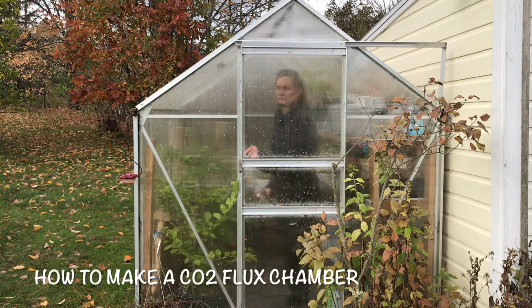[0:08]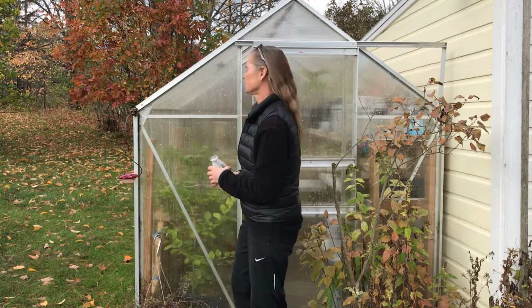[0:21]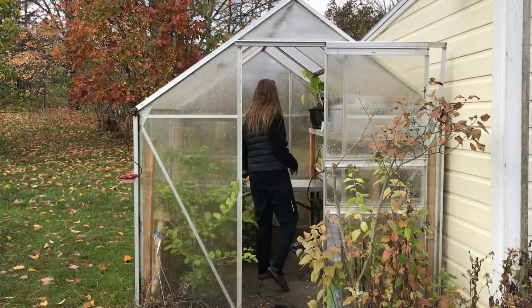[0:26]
Hey, welcome to the greenhouse. I'm Alex. This is a how-to video where I'm going to show you how to make the little flux chambers that we use for our photosynthesis and respiration experiments. Come on in.
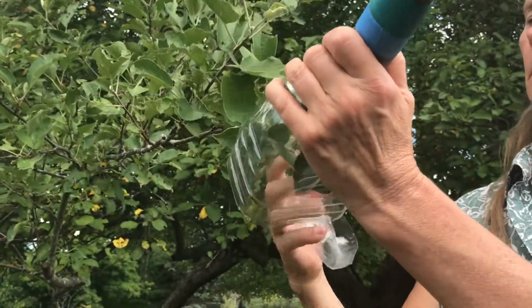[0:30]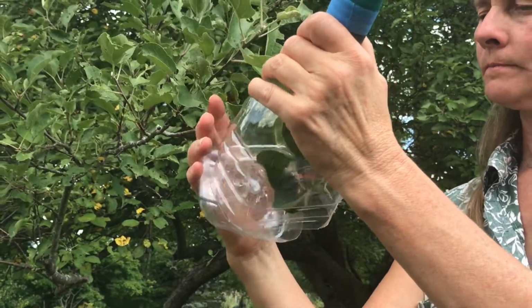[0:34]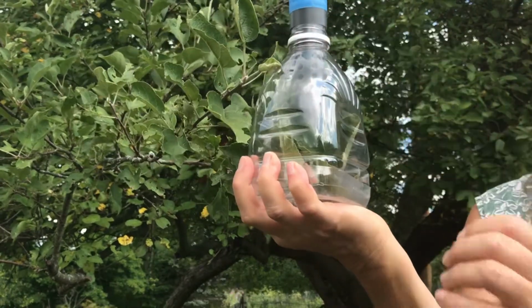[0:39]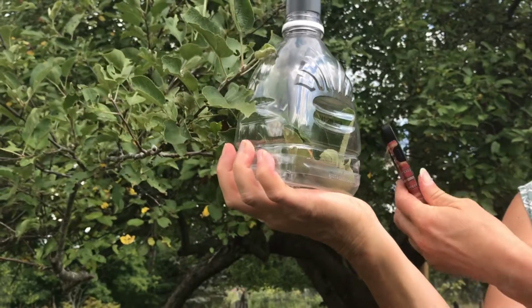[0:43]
When we want to quantify the rate of change of a gas like carbon dioxide, we need to work with a fixed volume of gas. This is because our instrument measures the concentration of carbon dioxide in most cases in units of parts per million. That is the number of CO2 molecules in 1 million molecules of air. So if we have twice as much air, we'll have twice as much carbon dioxide. That's why we need to build a sample chamber with a fixed and known volume.
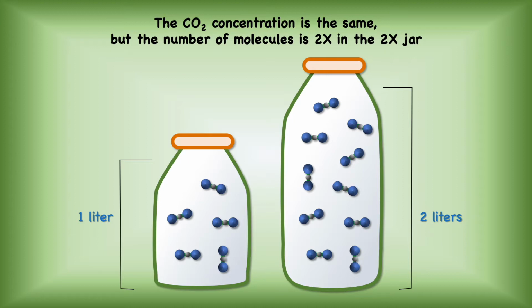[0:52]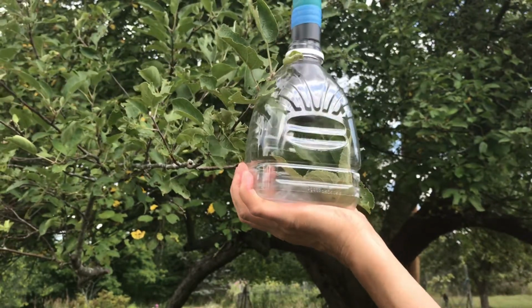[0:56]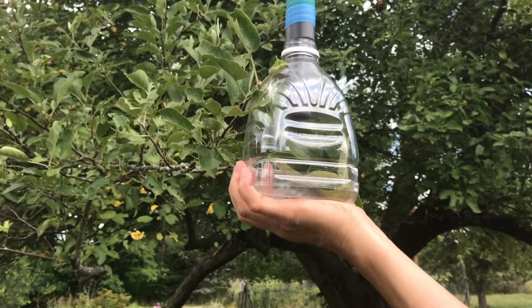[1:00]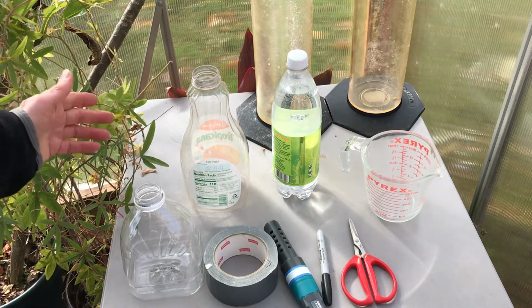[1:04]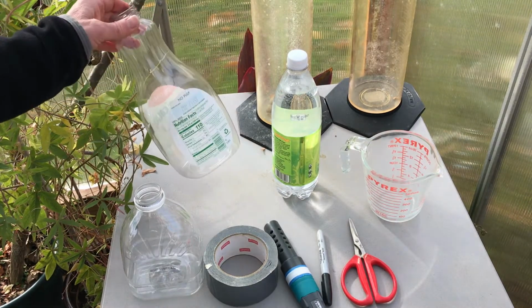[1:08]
By far the easiest volume to work with is one liter. One of anything will make our calculations much easier, and it gives us one less place to make a mathematical error. Here are all the materials that we're going to need. Plastic juice bottles make great flux chambers. Clear plastic is good for photosynthesis, and it's flexible enough that we can cut it up to any shape or size we want.
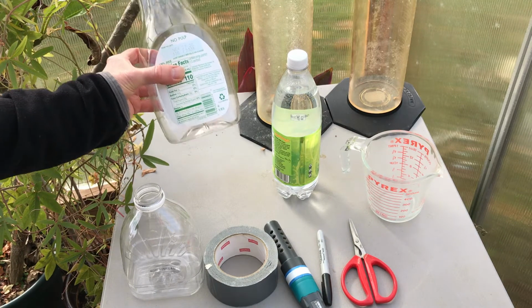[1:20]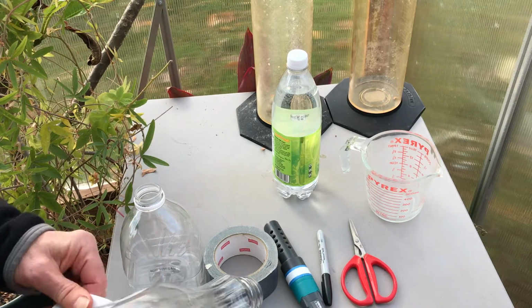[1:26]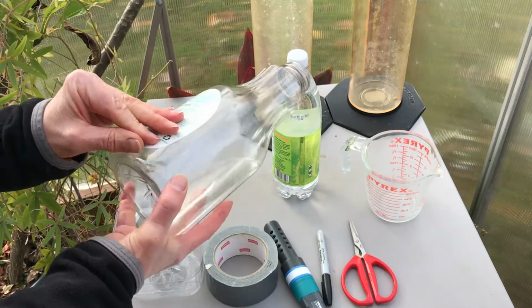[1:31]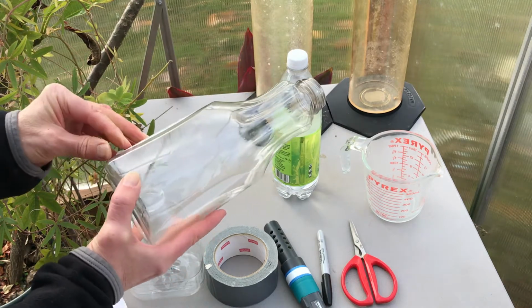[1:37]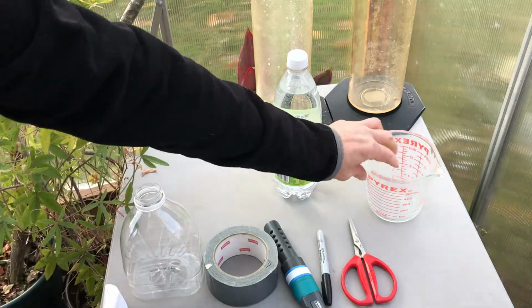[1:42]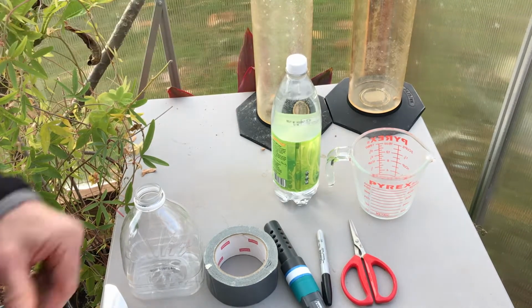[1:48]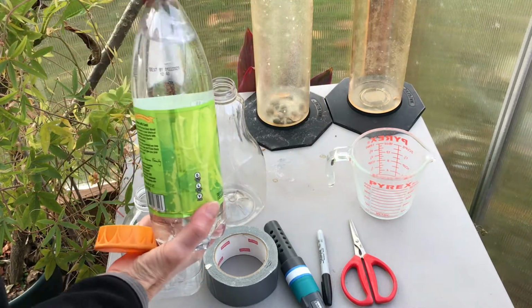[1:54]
I'm going to start with a 52 ounce juice bottle, that's 1.6 liters, and I'm going to peel off the labels so that the sunlight will pass through. Then to make this a one liter container, I'm going to need one liter of water. You can measure a liter with a beaker if you've got one, or a measuring cup, or even a one liter soda bottle. So what I'm going to do is pour the water in.
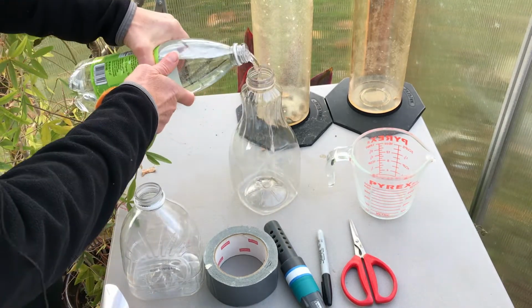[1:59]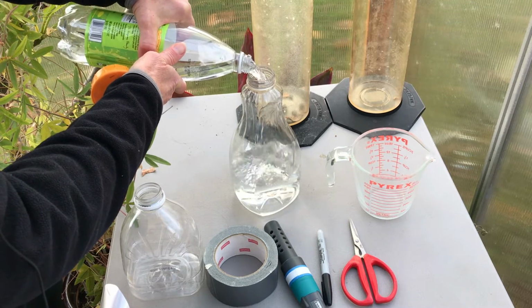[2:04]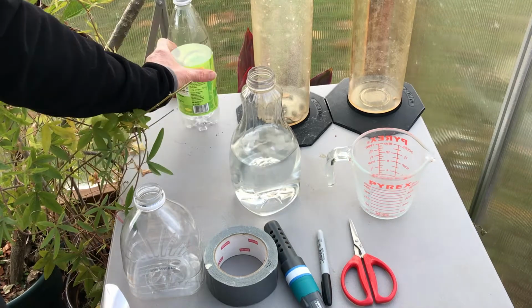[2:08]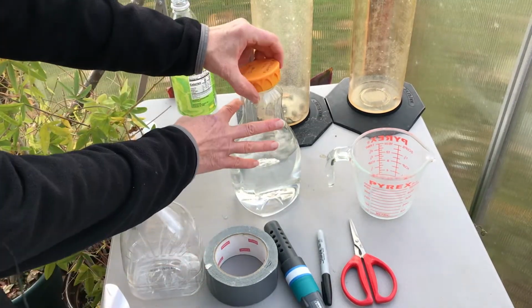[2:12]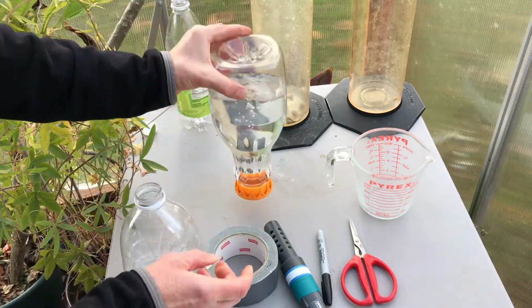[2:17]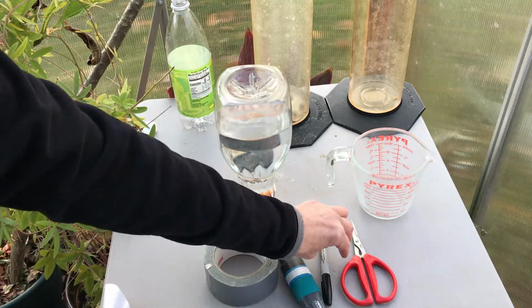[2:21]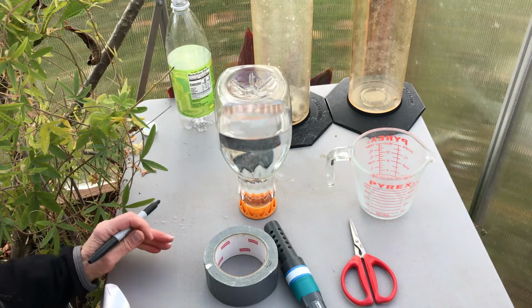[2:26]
One liter. I'm going to put the cap on and turn it upside down. Now once the water settles down, I can draw a line all the way around the bottle at the one liter mark.
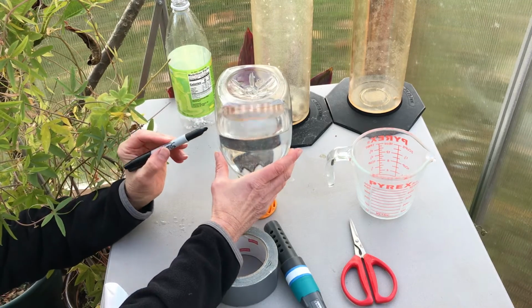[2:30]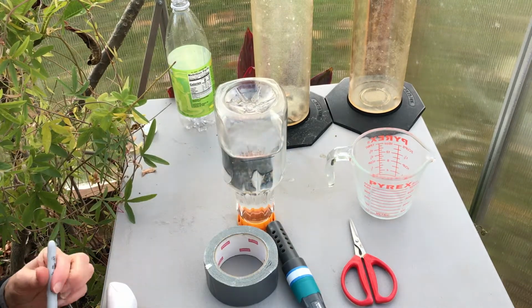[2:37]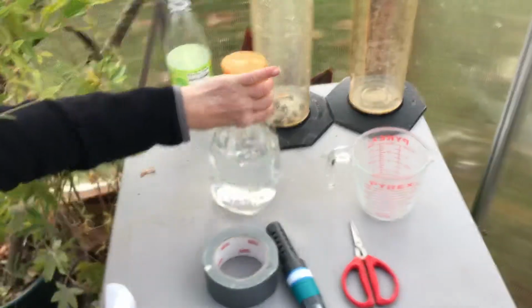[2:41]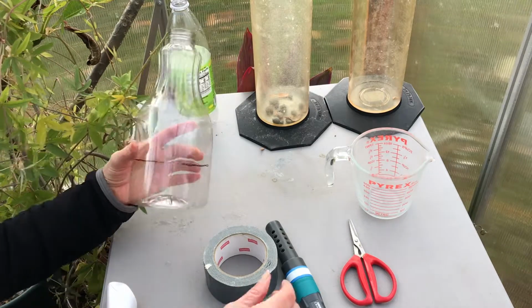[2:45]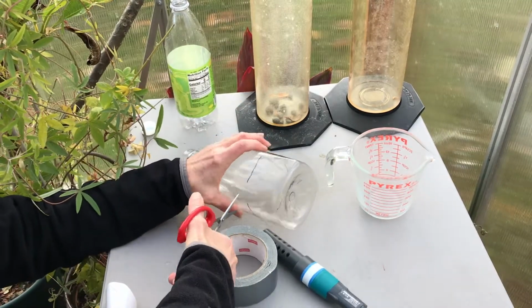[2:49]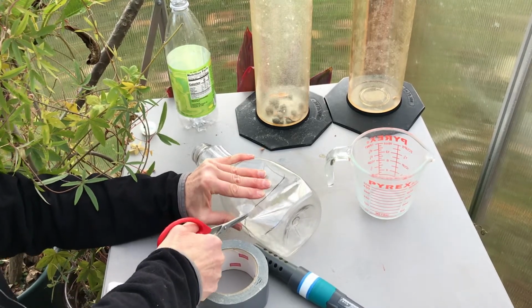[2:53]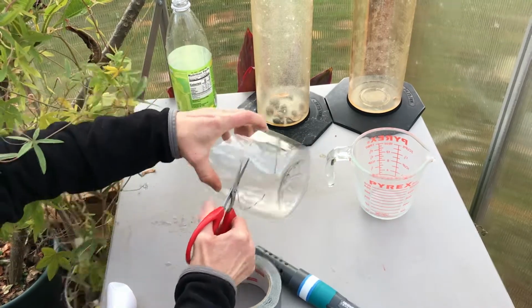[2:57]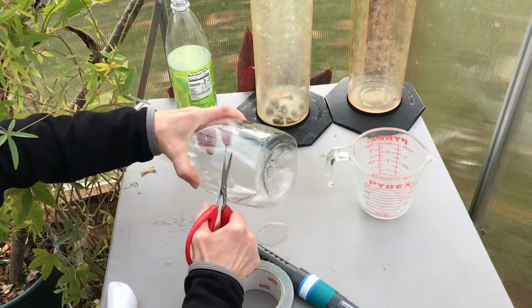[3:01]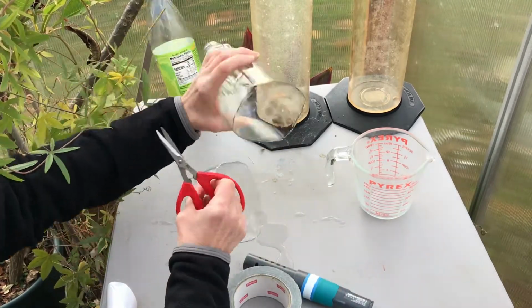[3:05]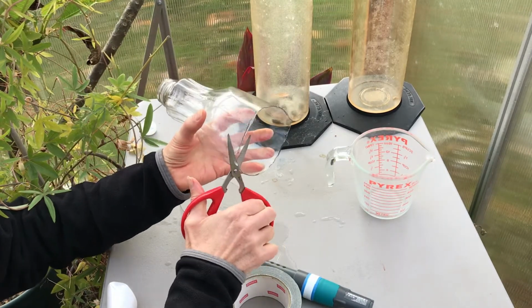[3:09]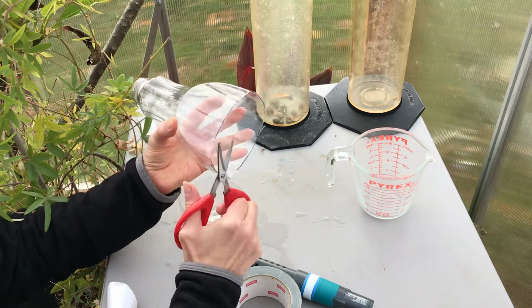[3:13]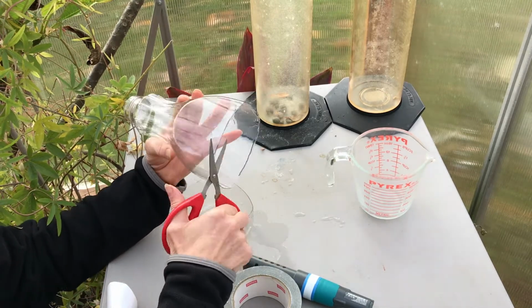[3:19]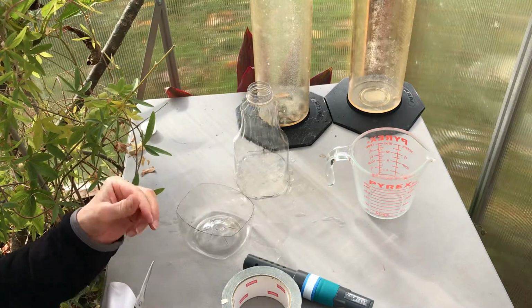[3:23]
Okay, now I'm going to get the water out and we're going to cut the bottle. So we're going to very carefully cut this on the mark. All right, and once you've cut it off, you can trim it up and make it even. It's good to make it even; you don't want any little pokey things on this.
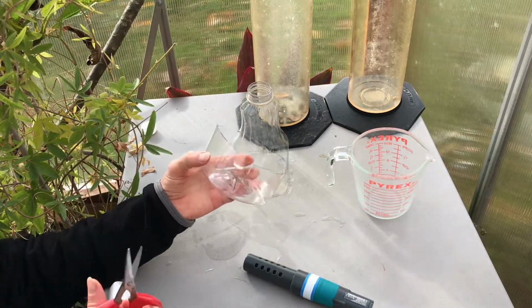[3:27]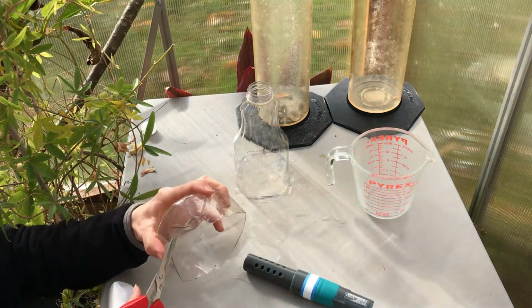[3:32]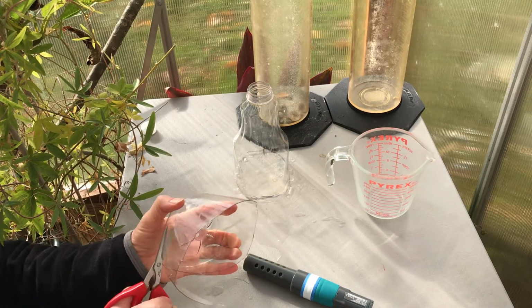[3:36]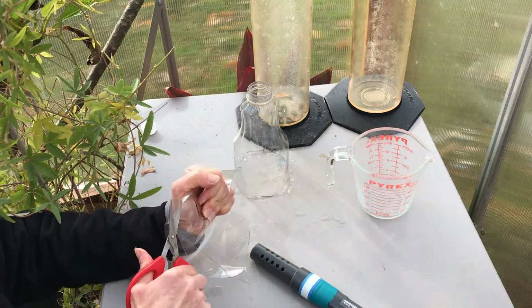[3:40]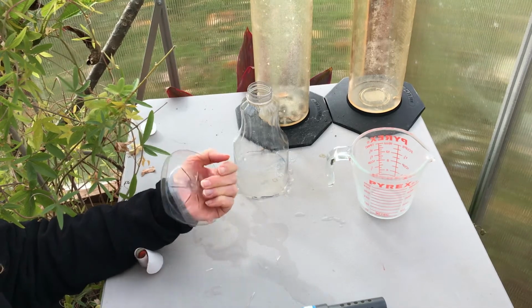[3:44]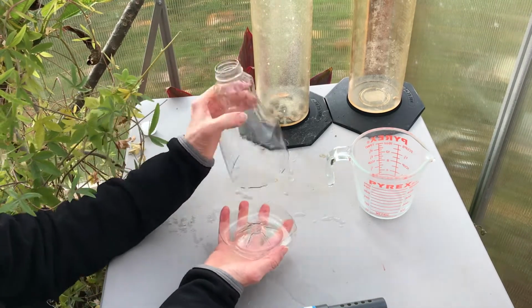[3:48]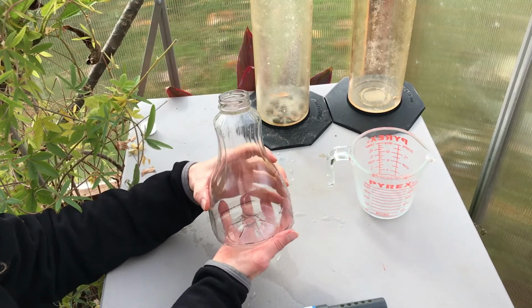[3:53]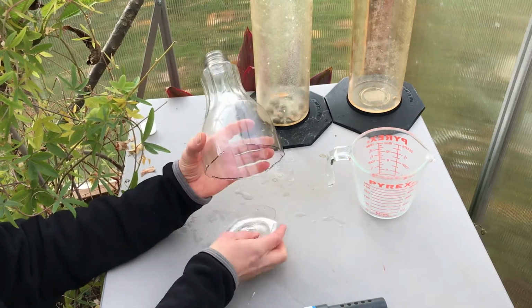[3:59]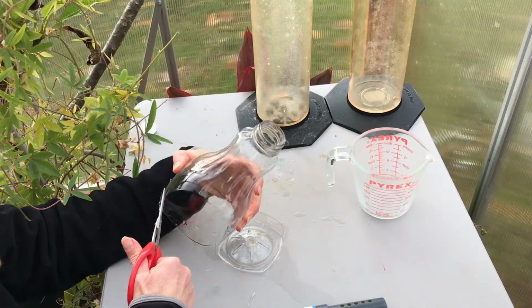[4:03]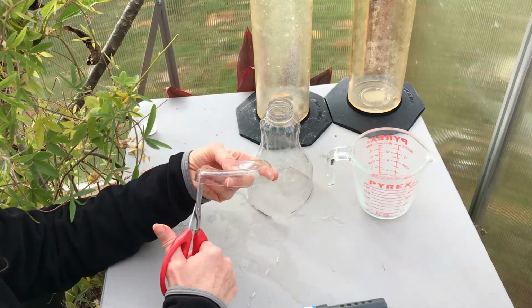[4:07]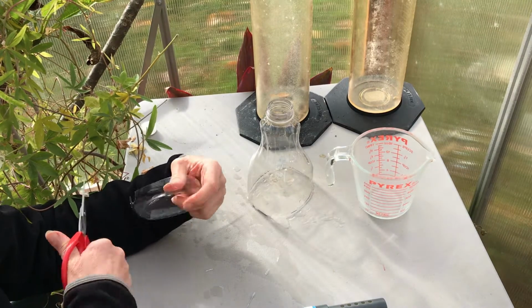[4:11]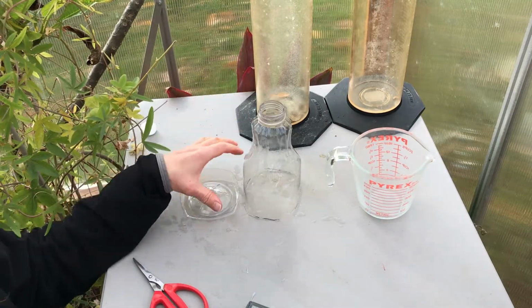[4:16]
Okay, now for photosynthesis I'm going to need the bottom half as well, so I'm going to trim this down a little bit, because we just need to be able to close up the bottom. All right, there we go. Okay, so now these two pieces will fit together so that we can close this around our plant. I'm going to need to make a notch in the corner of both halves so that we can put a stem or some leaves in here.
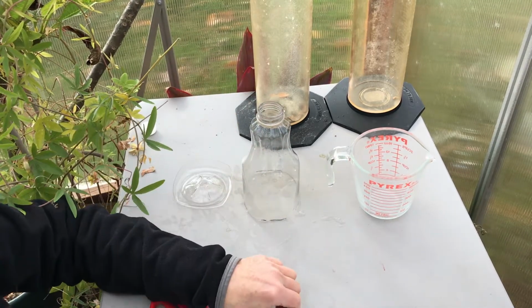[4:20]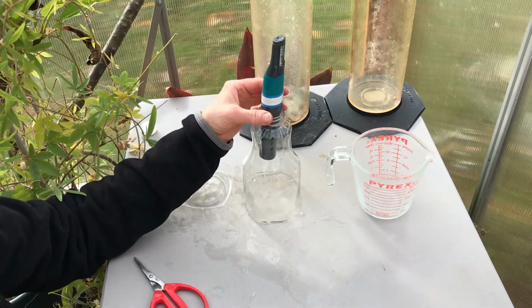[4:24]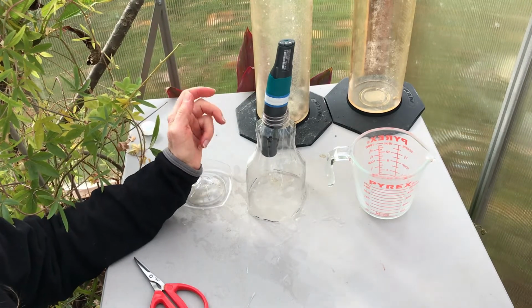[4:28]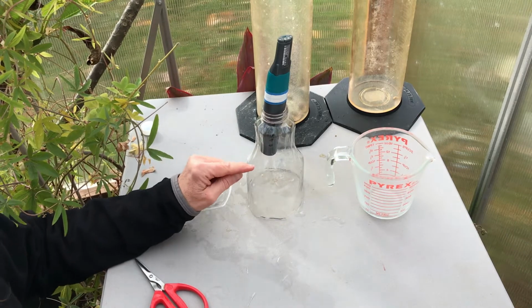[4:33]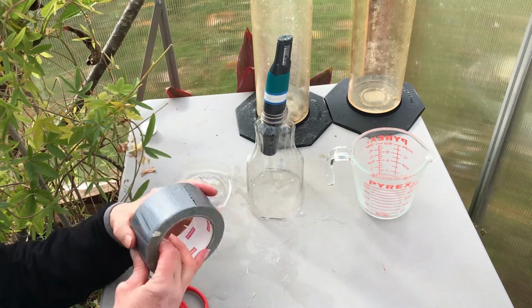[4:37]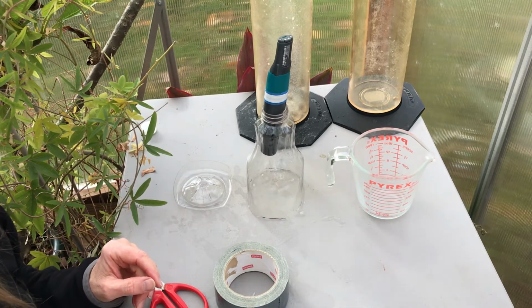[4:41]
Now the top of the bottle. You need to check ahead and make sure that the opening on the top of the bottle is going to fit your CO2 probe. Fitting it in nice and loose is fine, because we're looking at the gas fluxing through the chamber. For a respiration experiment, we don't want the light to shine through the bottle, so we're going to take some duct tape and cover the bottle up. This is what it will look like covered in duct tape.
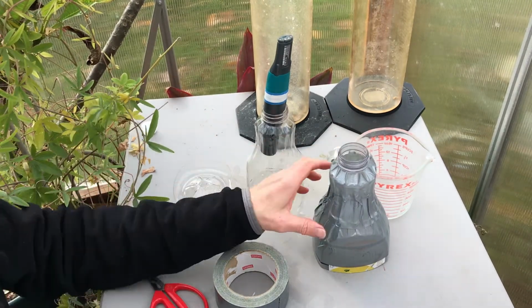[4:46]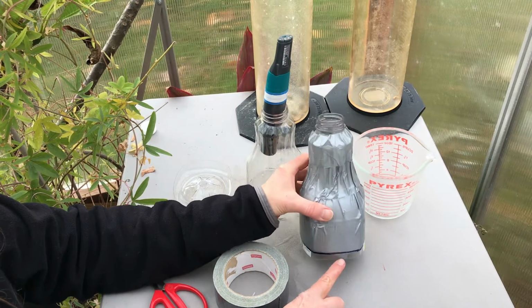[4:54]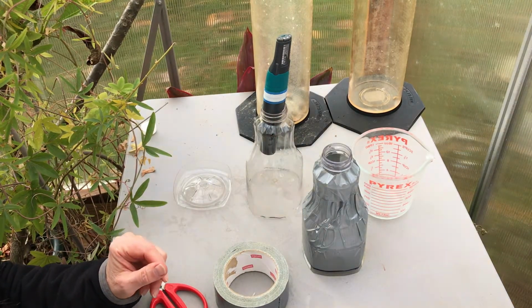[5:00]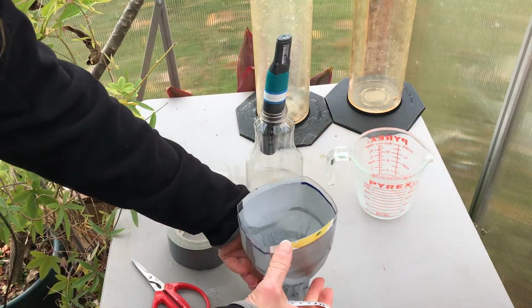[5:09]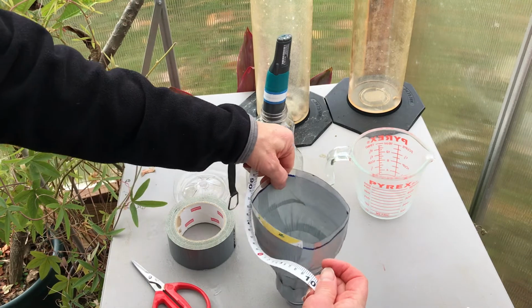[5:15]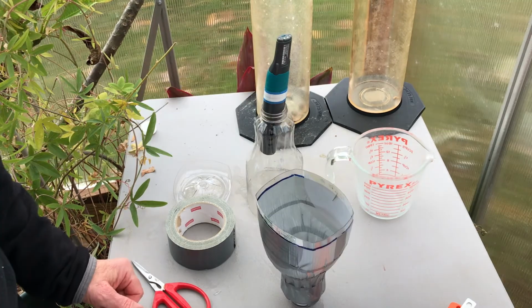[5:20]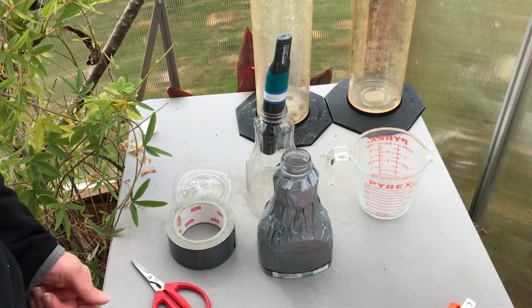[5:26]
Notice that I've actually cut this one a little bit below my line, and that's so I can push this into the soil nice and firmly and have the soil level be at that one liter mark. The other thing I need to know for respiration flux is the cross-sectional area of the chamber. So this is about 10 centimeters by 11 centimeters, and there we are. We're ready to go out and measure two of the most important parts of the carbon cycle.